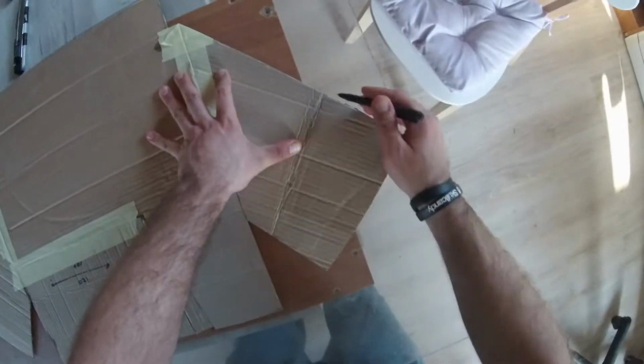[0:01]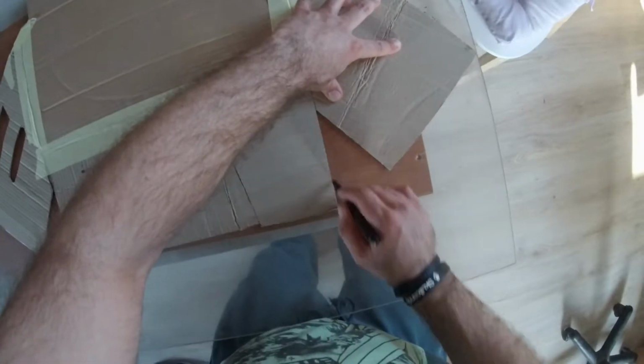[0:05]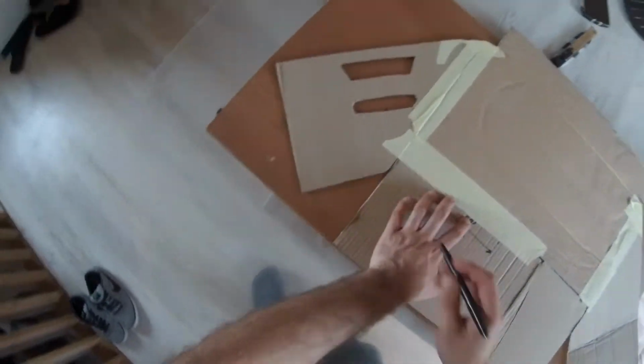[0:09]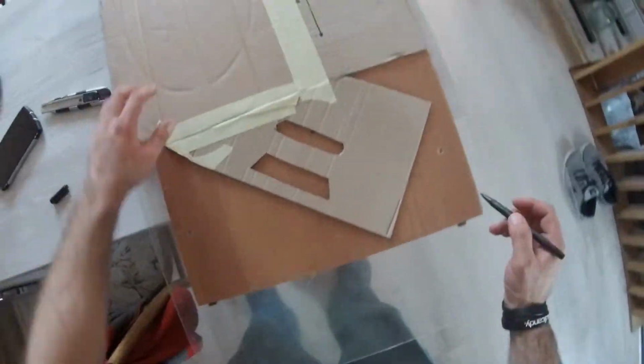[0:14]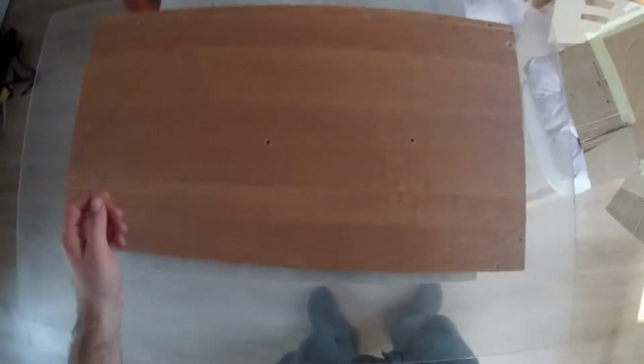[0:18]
Hi guys, we had an idea of creating a glove box that could be easily disassembled and assembled back and placed in any place of your preference. For this project we will require a sheet of cardboard which will be used to make a template for cutting our acrylic sheet, and the acrylic sheet itself, which is 5 mm thick.
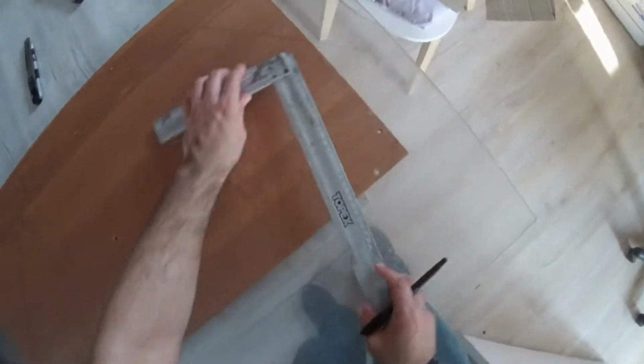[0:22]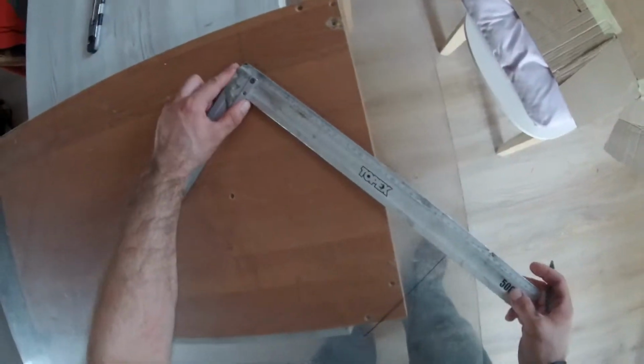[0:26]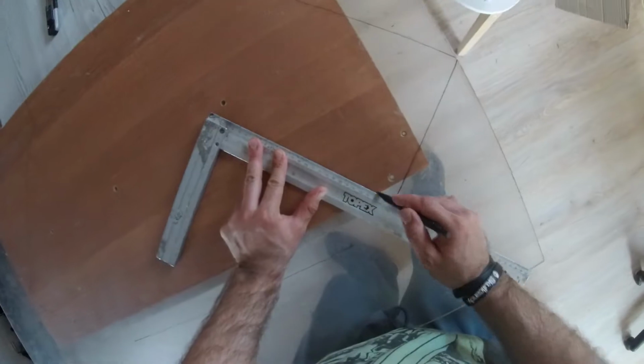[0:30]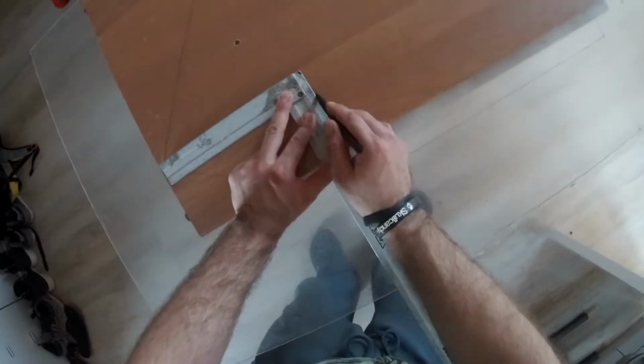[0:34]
First we will create our cardboard template and see how it assembles in the enclosure of our preference. And then we lay out our acrylic accordingly. Then we go ahead and cut everything.
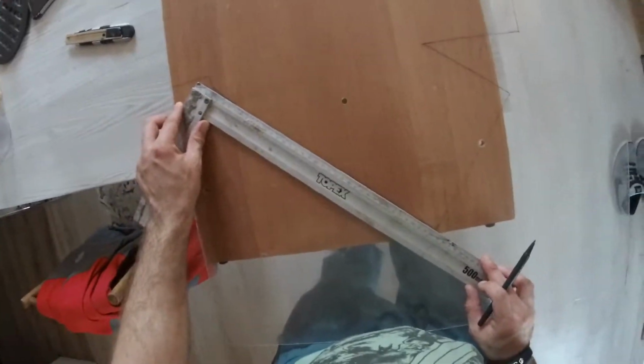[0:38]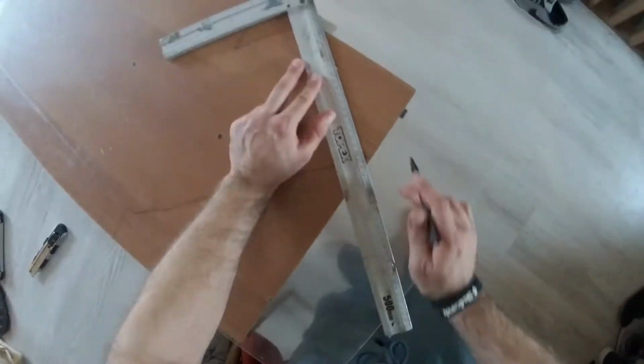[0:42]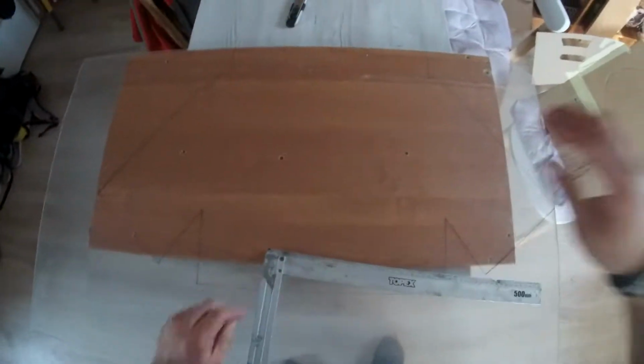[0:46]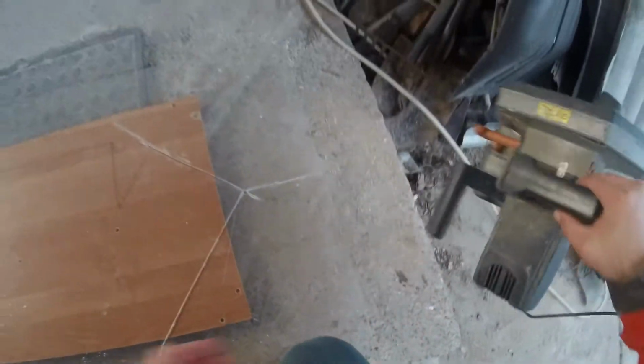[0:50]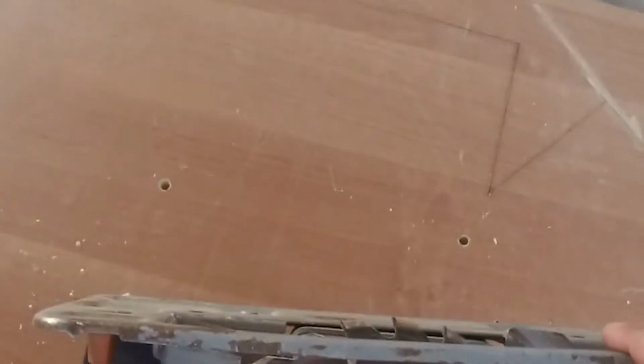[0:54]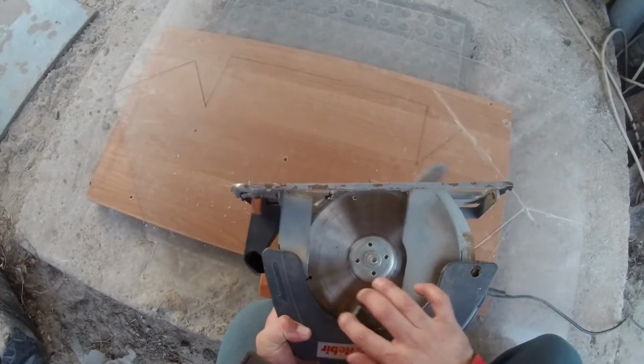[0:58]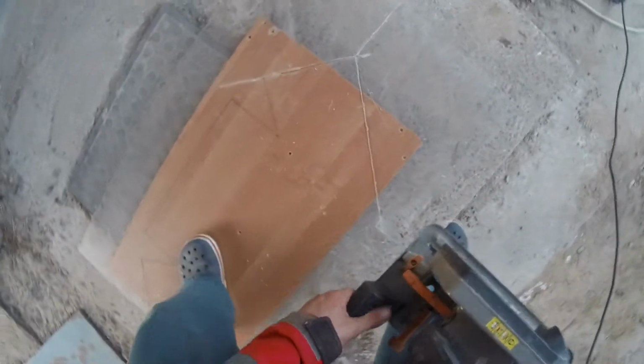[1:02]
And the best way to cut the acrylic is to use the circular saw for wood. We'll set the depth of cut to 7 or 10 millimeters and place a sheet of wood laminate under the acrylic sheet. Then we simply proceed according to the template.
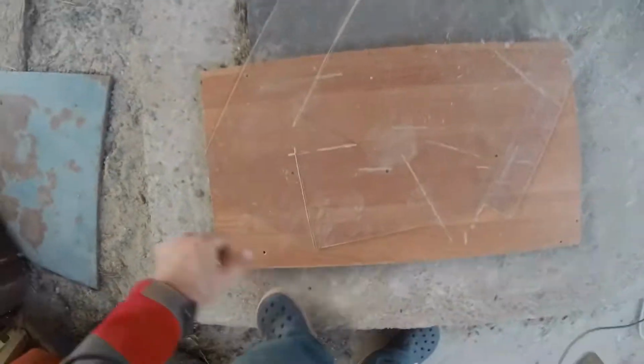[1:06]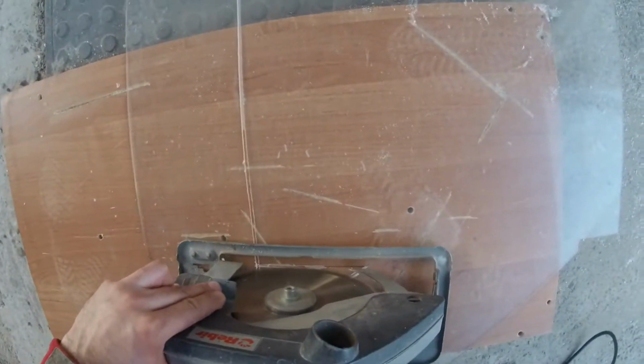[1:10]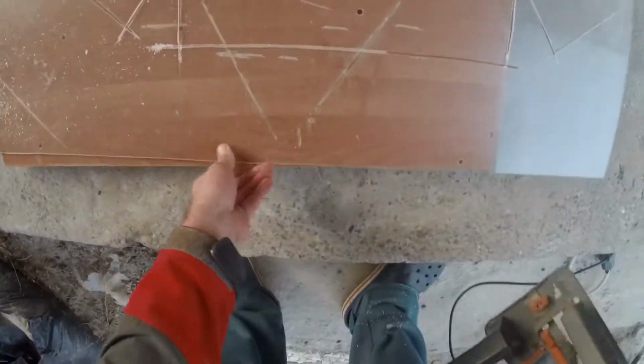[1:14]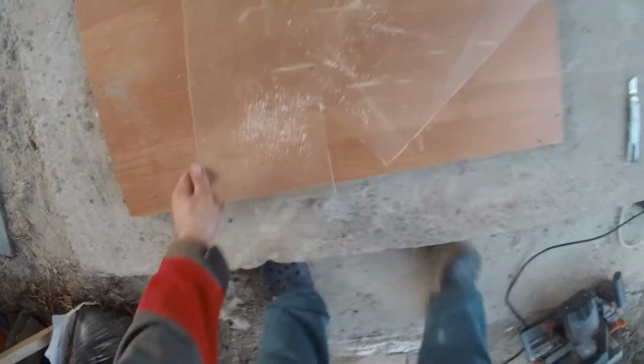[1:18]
When the cutting is done, the cutting edges need to be polished and folded, but we were not really sure if our project would be successful, so we put off this procedure until the end. Now let's get to bending our acrylics.
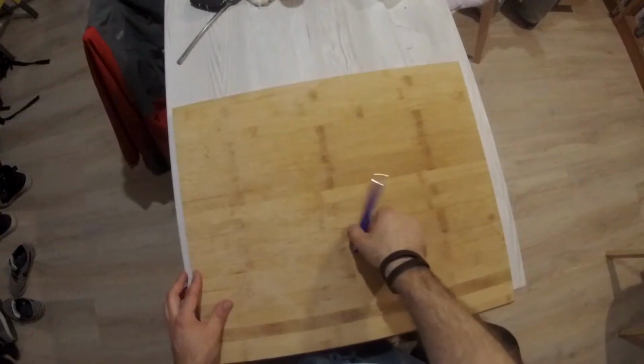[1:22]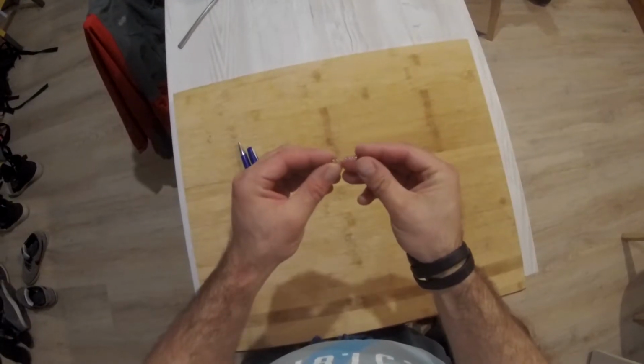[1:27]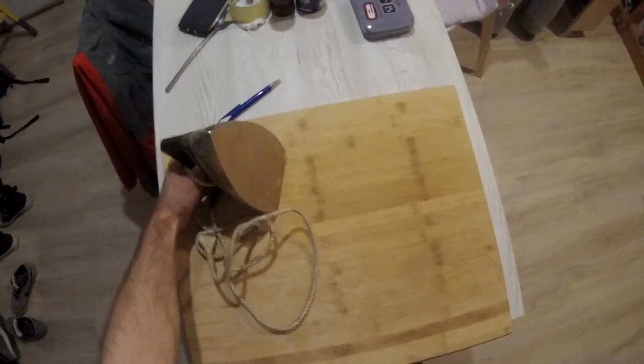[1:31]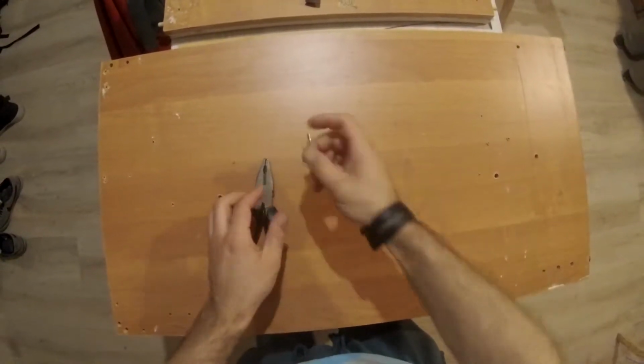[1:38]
And for this purpose, we'll need to make a little device which will allow us to fold the acrylic sheets. We will need a piece of wood laminate, a few wooden blocks, a piece of nichrome wire, a few screws, a little spring, and a dimmable socket. First of all, we'll take any automatic pen and take out the spring.
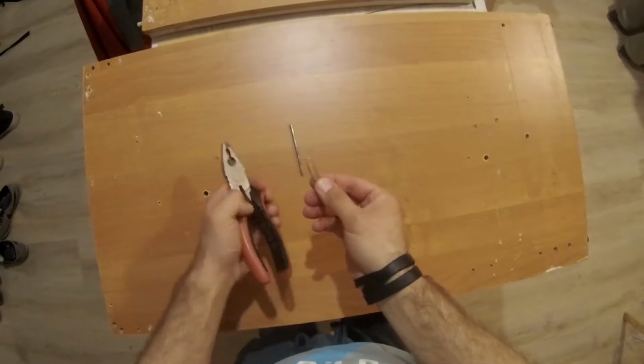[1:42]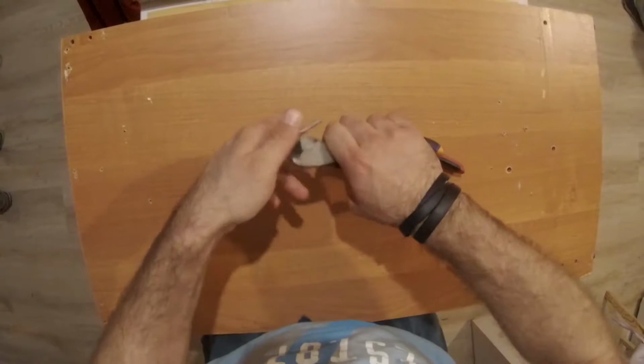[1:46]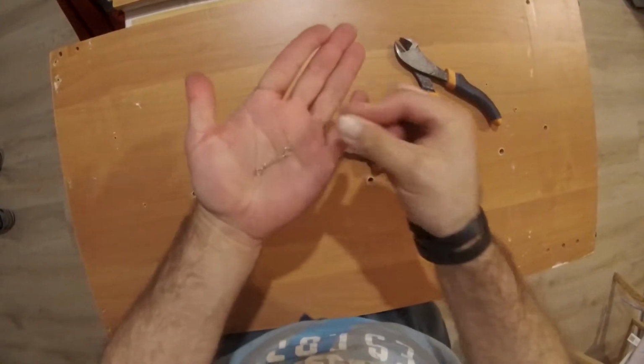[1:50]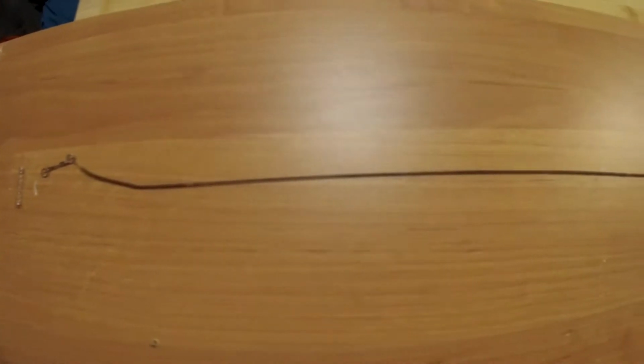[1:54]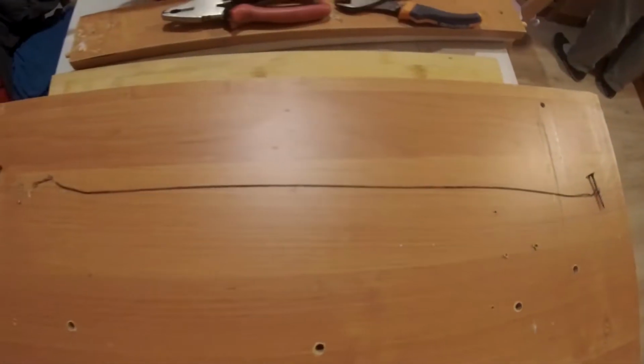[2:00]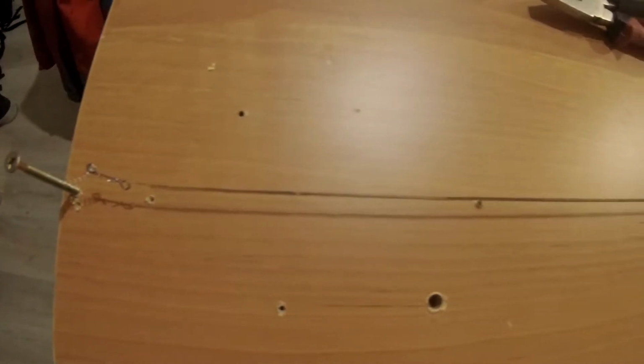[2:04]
And now, where can we get the nichrome wire? We had an old iron, but you can get an old blow dryer or a broken heater, or simply buy a piece of wire on eBay. We'll take a small paper clip and turn it into a loop so it will be able to control the tension of our nichrome wire. So it's two screws, a paper clip loop, a nichrome wire, and we are almost ready.
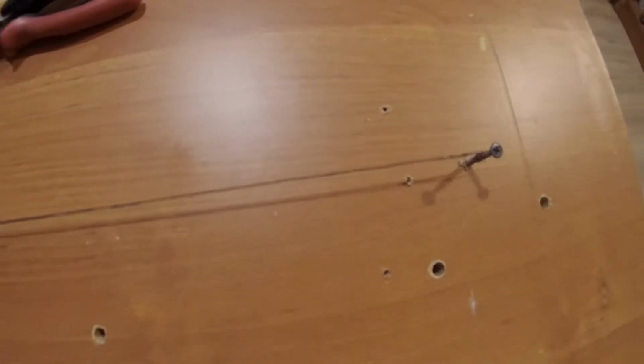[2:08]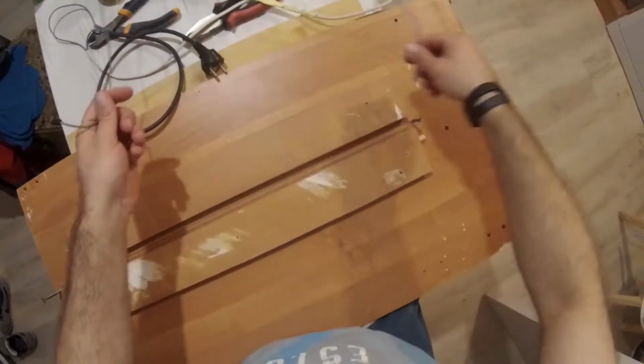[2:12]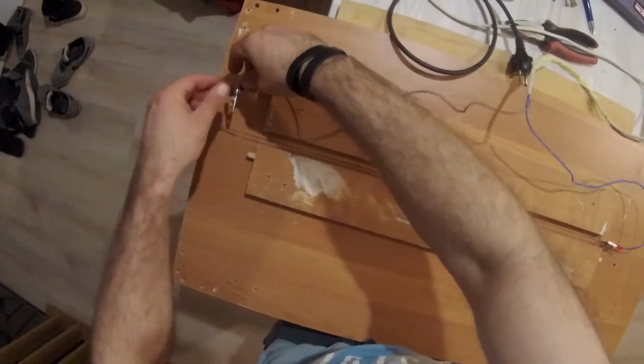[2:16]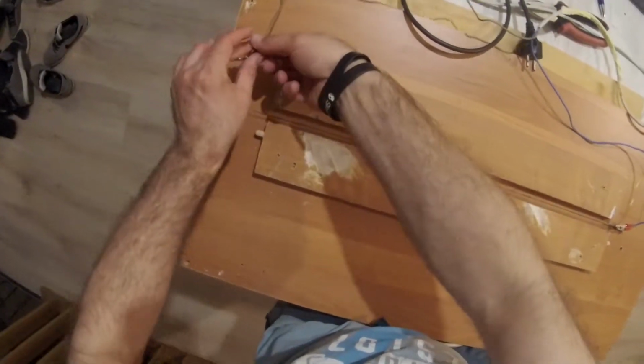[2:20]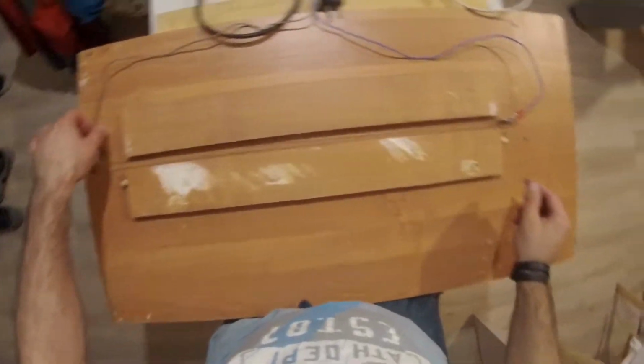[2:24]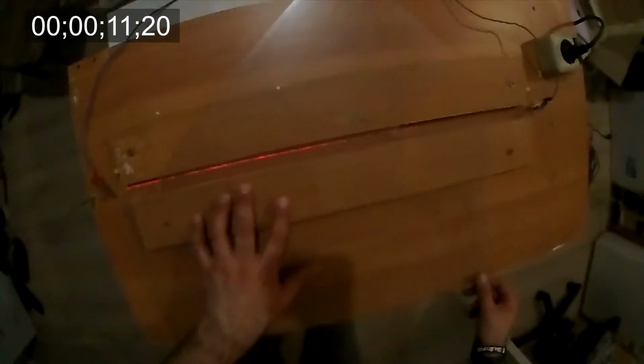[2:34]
Now we'll screw down two wooden blocks along our nichrome wire in order to control our acrylic sheets. We'll attach our nichrome wire to one of the screws. We'll attach the wires from our dimmable socket to our nichrome wire. Then we'll set the minimal power and switch everything on. We'll increase the power until the nichrome wire becomes red.
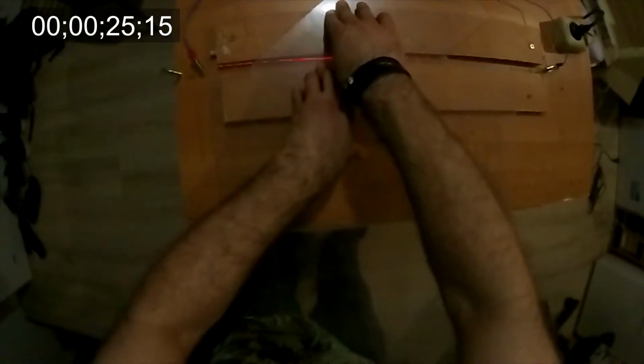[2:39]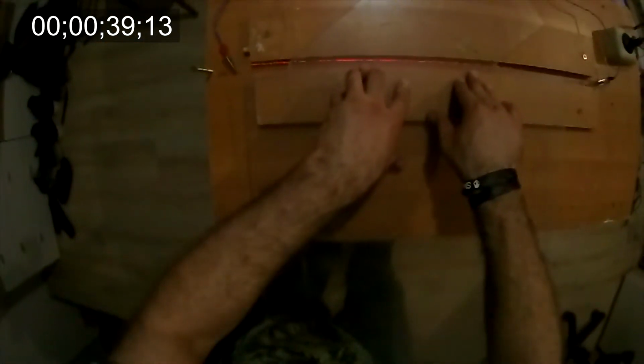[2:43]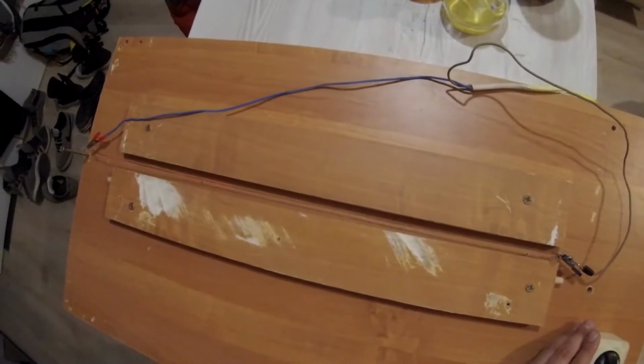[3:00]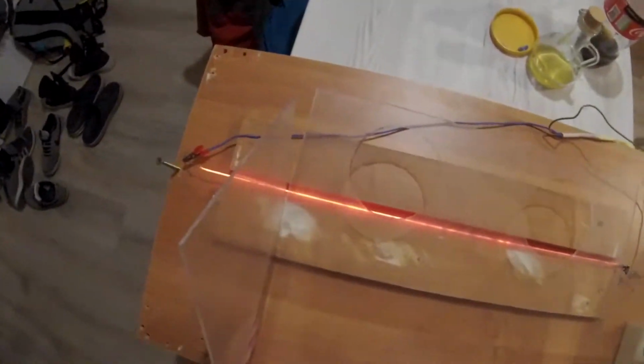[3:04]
Then we'll place our acrylic sheet so that our fold is right above the nichrome wire. Just let the acrylic sheet rest for 2 minutes. After bending the acrylic, fix the sheet so that it solidifies with the proper angle. Then repeat the process as much as you require.
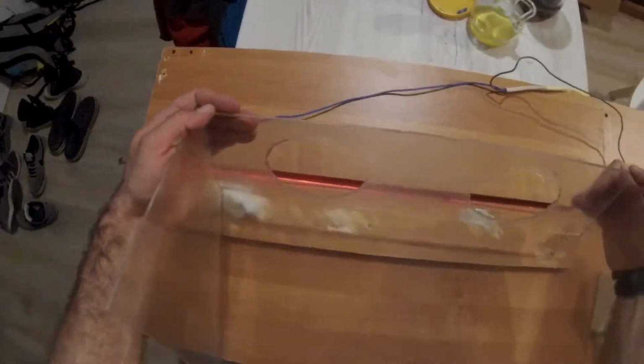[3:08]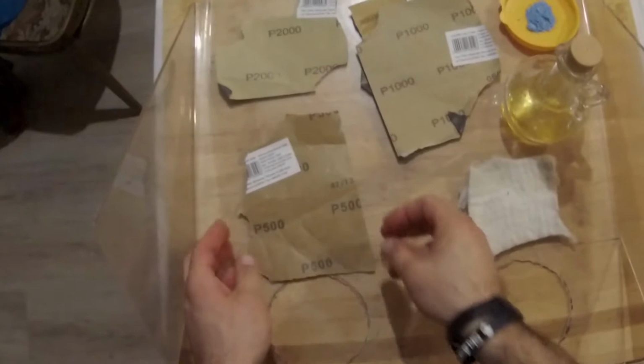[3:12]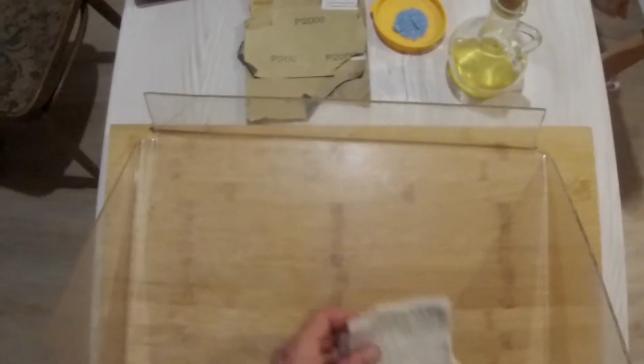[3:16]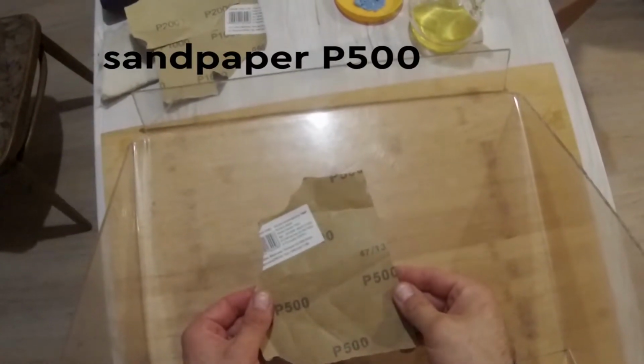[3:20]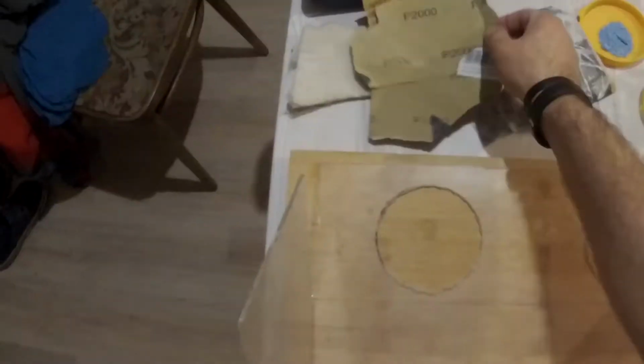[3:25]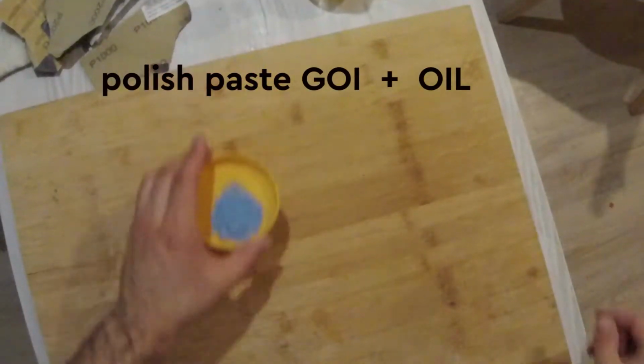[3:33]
After bending, we'll start polishing. We'll need several sandpapers, abrasive paste, and a piece of felt. We'll start sanding our acrylic and we'll progress from the lower grade to higher grade: 500 grit, then 1000 grit, then 2000 grit, and then we'll polish with the abrasive paste and the felt.
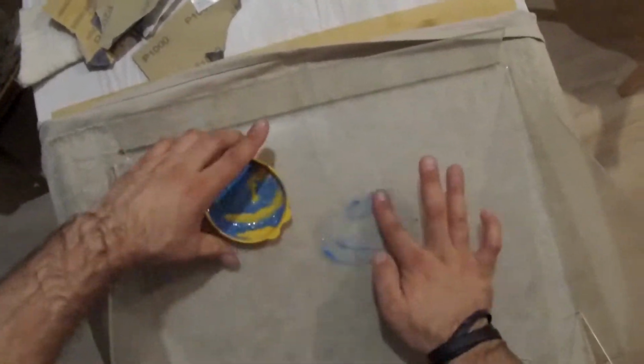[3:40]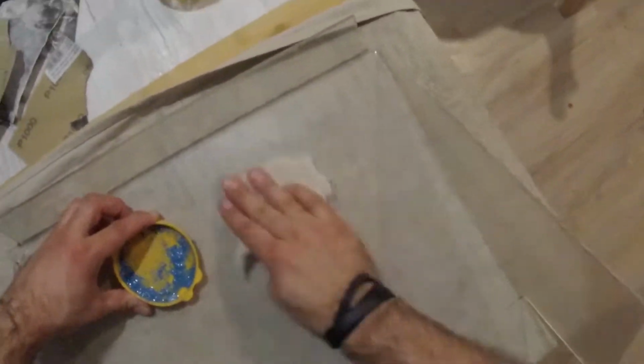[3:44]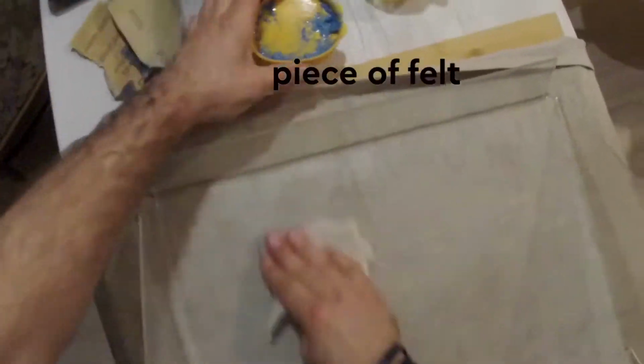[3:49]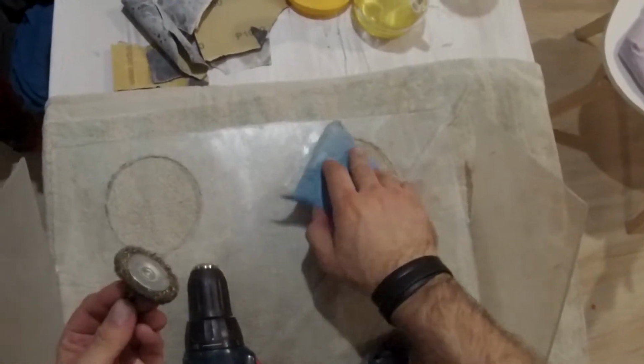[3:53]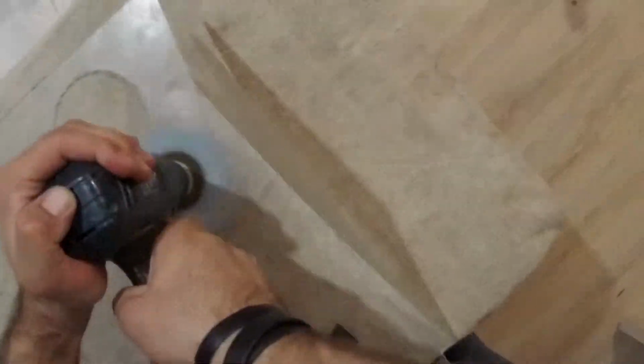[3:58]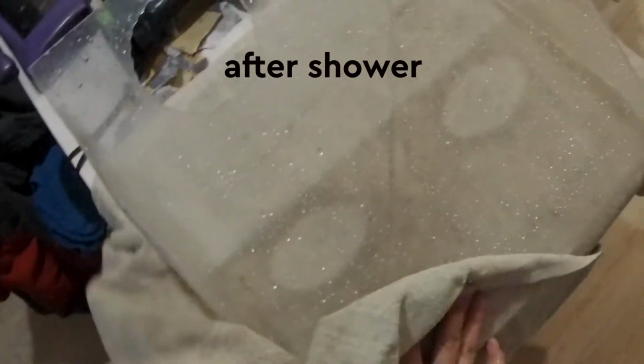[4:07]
You can use any fine abrasive paste, but we had a piece of Soviet abrasive paste. And we mixed it with a little bit of oil. Then we fixed our felt to the cordless drill and continued the polishing. After that, we'll need to wash our acrylic with soap.
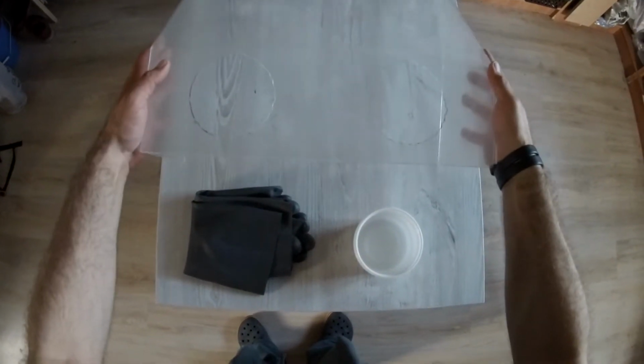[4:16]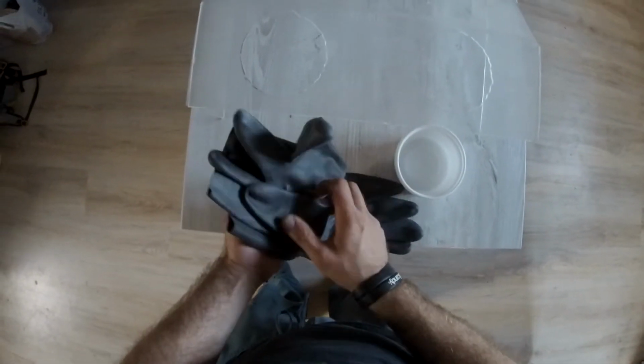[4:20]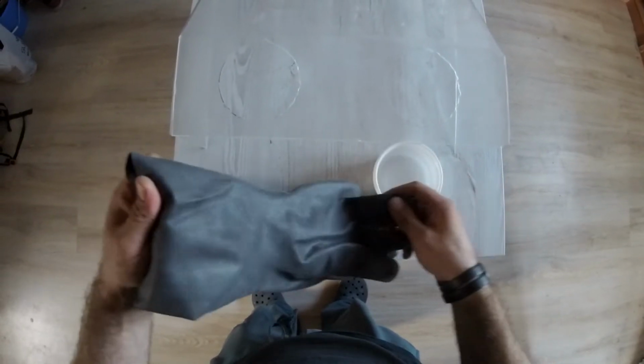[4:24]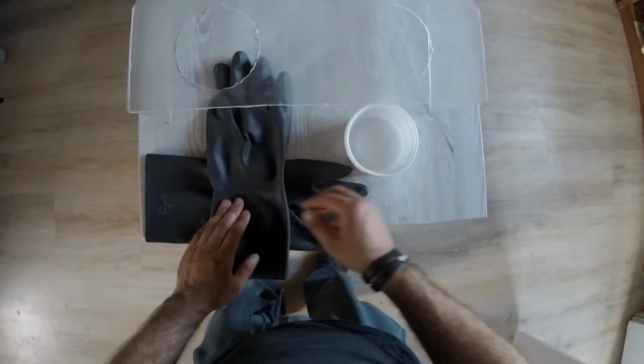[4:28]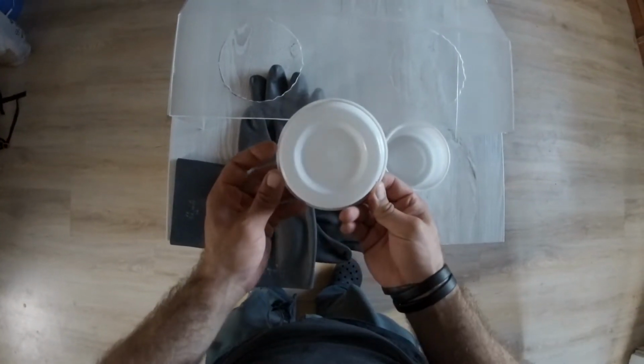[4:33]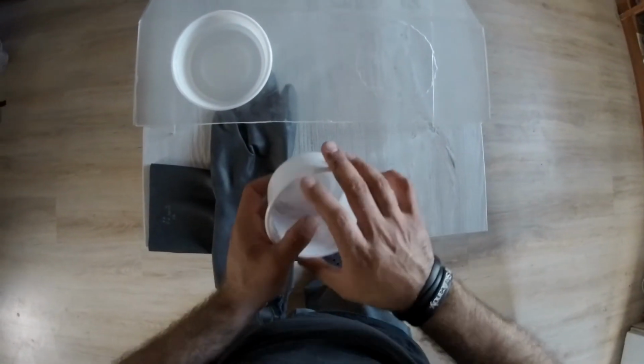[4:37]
And now all that remains is to fix the gloves. This is the glove box after all. For this purpose, we used butyl rubber gloves, which are used to deal with chemicals and are relatively inexpensive. Now, how do you fix the gloves?
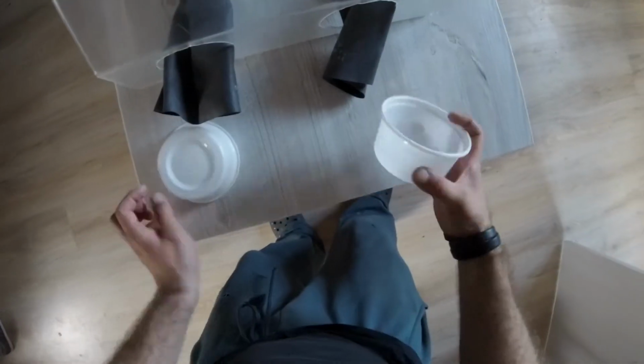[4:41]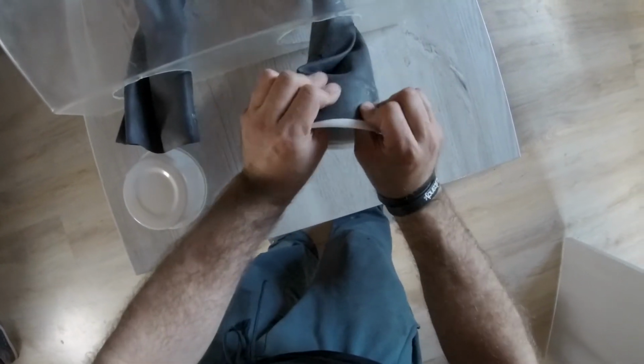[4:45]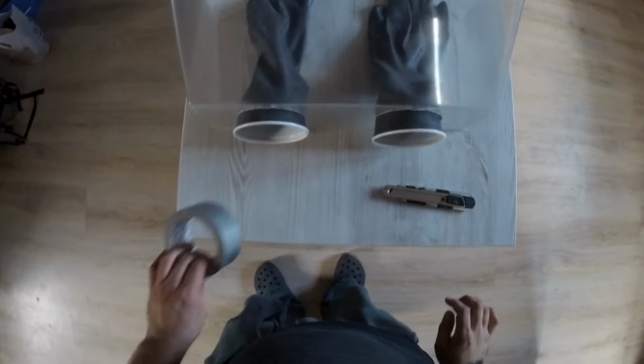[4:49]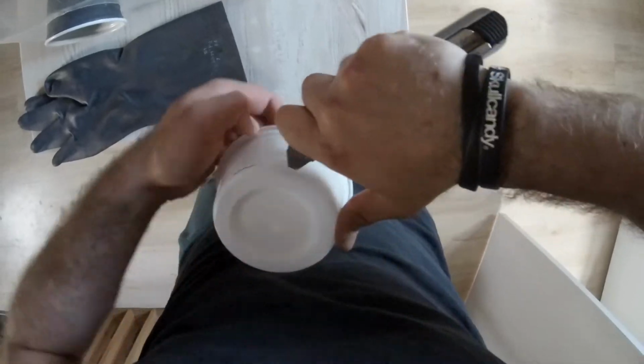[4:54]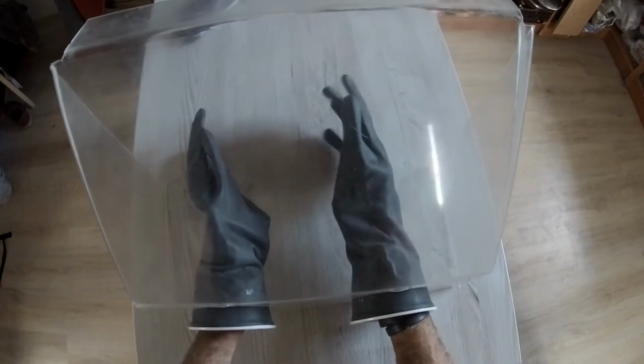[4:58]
You can make the adapters out of any Tupperware that you have around. We'll cut the bottom away from the vessel, insert it into the glove and glue everything nicely. Now we will install our box into the enclosure of our preference, or the secret spot of your preference, and that's it. It's all done.